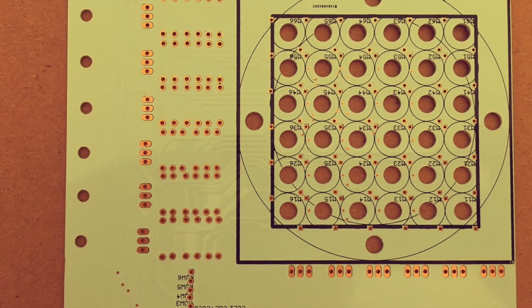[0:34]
So joining me from now on is Julia, so I'll let her introduce herself. Hello everyone, I'm really excited to join the Brainery. Like Lucas, I'm a science nerd and I love optics, so I'm really excited for some of the future projects that we're going to work on. Yeah, we got a lot of really cool optics projects planned out for the future.
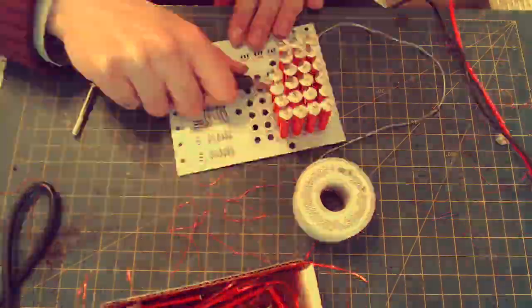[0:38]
But for today's video, we will be assembling the latest PCB design we've made for the Ferrobot. And following that, we will be controlling it using a software package we've been developing called SciCAD. Alright, enjoy!
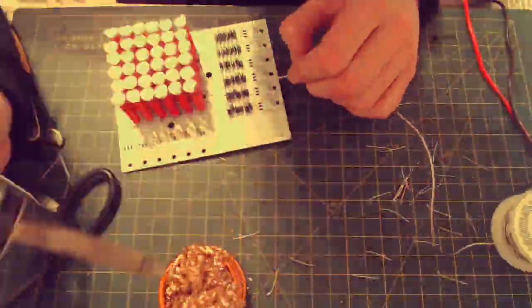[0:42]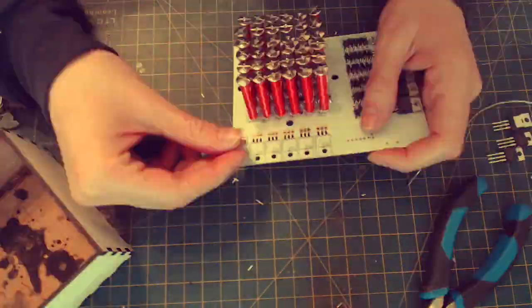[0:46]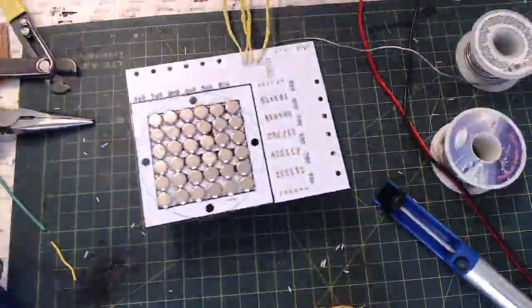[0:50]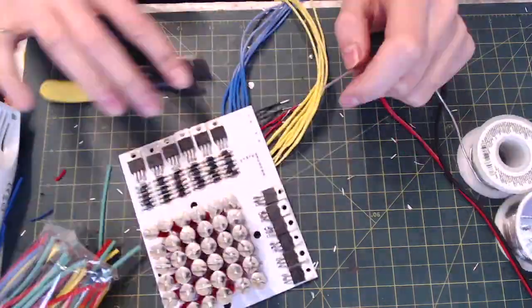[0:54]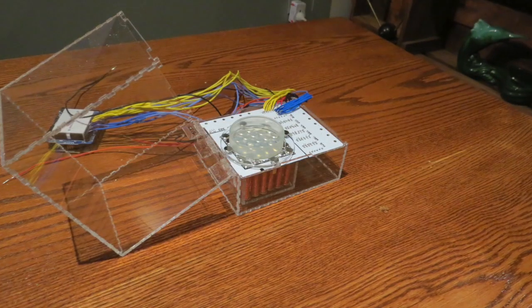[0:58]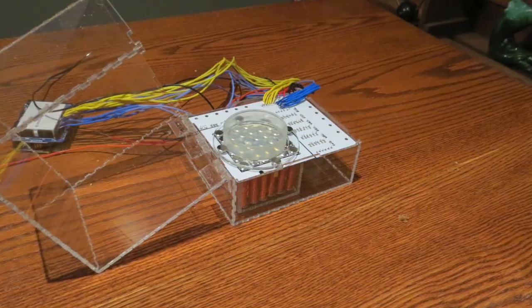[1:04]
With this design, I thickened and widened my traces so they can handle a lot more current without burning up. I made my board design smaller and also added a lot more spaces for my electromagnets. There's one thing I didn't consider, and that was I placed vias directly below the screw heads of my Chicago screws. To avoid making short circuits, I covered them with electrical tape. I then placed the board inside a laser cut acrylic container assembled using chemical cement and acrylic hinges.
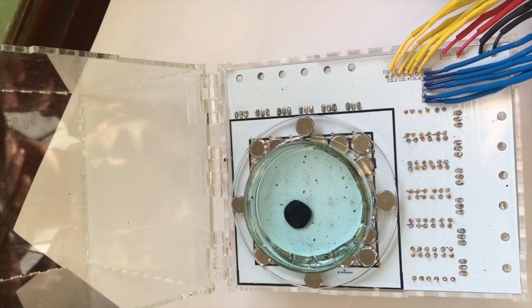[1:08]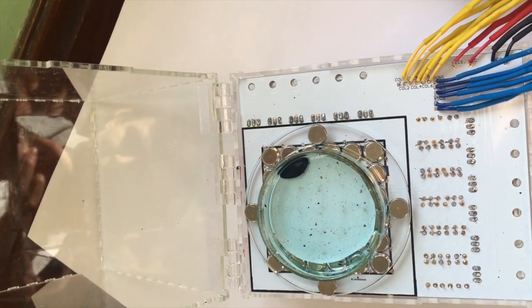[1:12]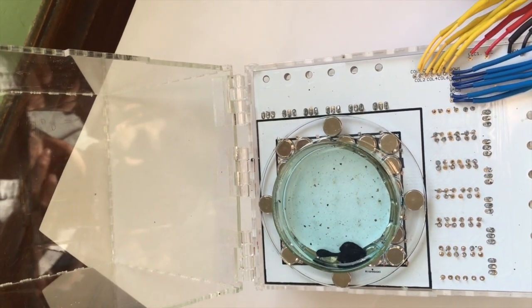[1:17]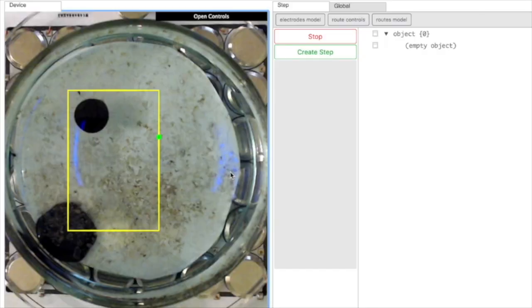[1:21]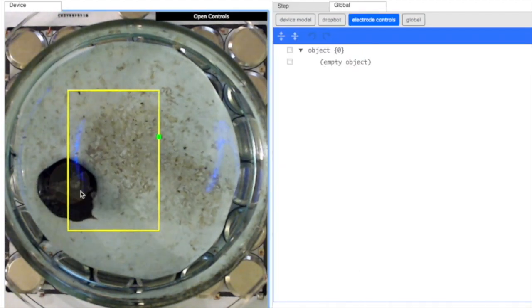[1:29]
Alright, so the design seems to be working really well at half an amp and 1 volt. The only things I'd like to change are move away from having so many wires by adding a shift register directly to the board, as well as having a mount so I can put an Arduino Nano directly on the device to make it more portable. With the additional lid, it was much easier to add the webcam overlay for the SciCAD software. You can see routes and keyboard control are working great.
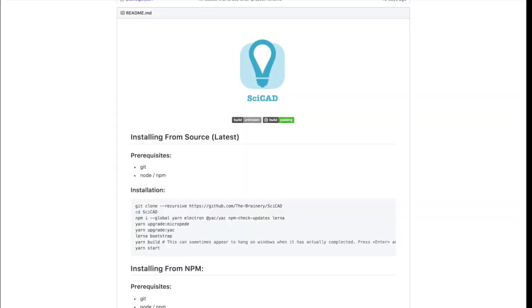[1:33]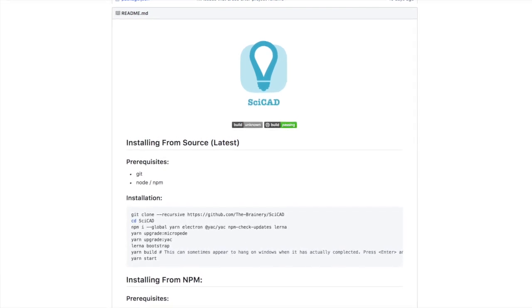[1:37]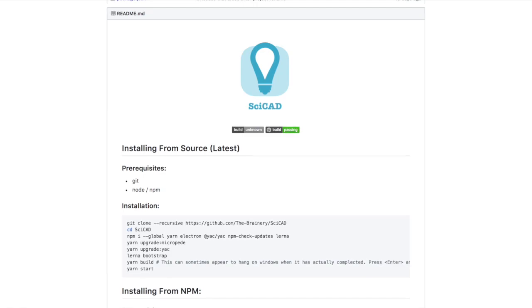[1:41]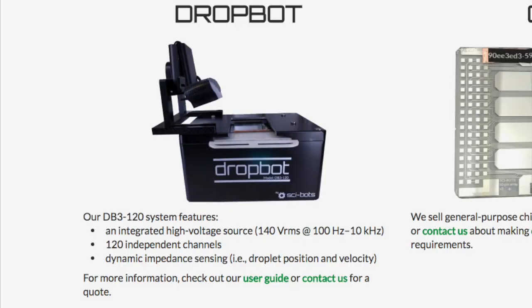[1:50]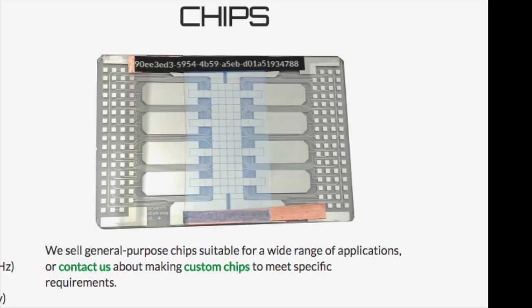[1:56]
I also renamed the project SciCAD as an homage and thanks to the company Sci-Bots. Sci-Bots funded the development of this open source software project for almost an entire year and is run by Ryan and Christian Fobel, the original developers of the open hardware project, the Dropbot. I actually named the Ferrobot after the Dropbot since that open hardware project was a major inspiration on me building this digital microfluidic platform. Unfortunately, they no longer have the resources to maintain the software for their Dropbot product.
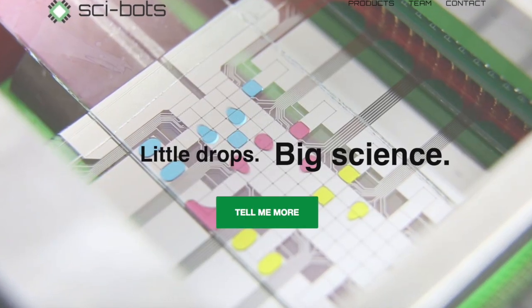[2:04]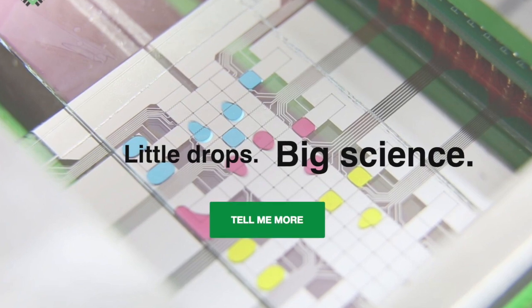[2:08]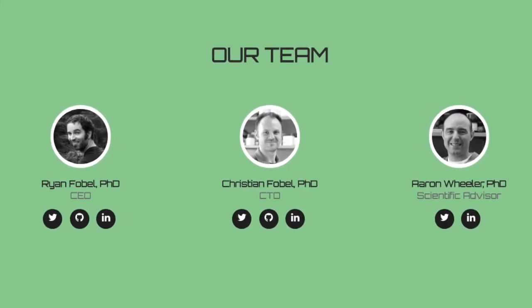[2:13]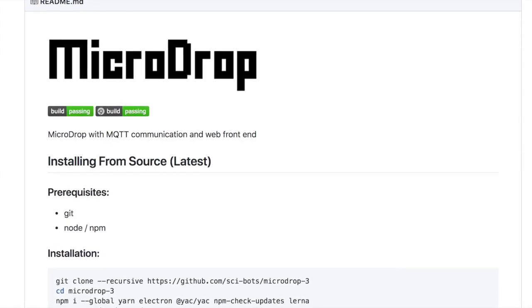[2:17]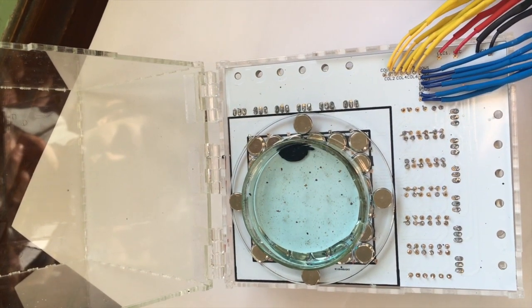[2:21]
However, I'll be doing my best to ensure that SciCAD is compatible with the Dropbot long into the future. If things do happen to change though, the original project will be left in the Sci-Bots organization on the MicroDrop 3 GitHub page. Alright, that concludes my video for this week.